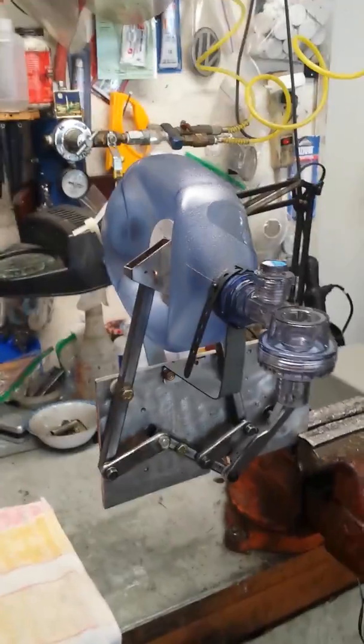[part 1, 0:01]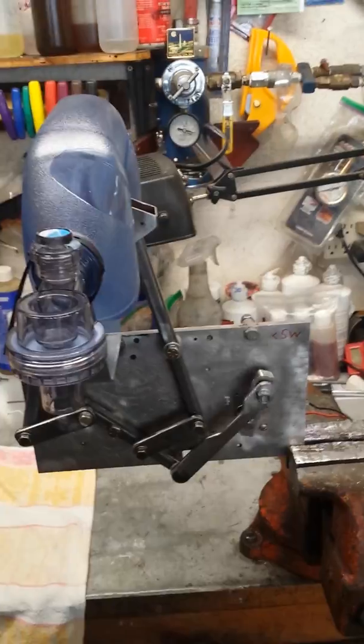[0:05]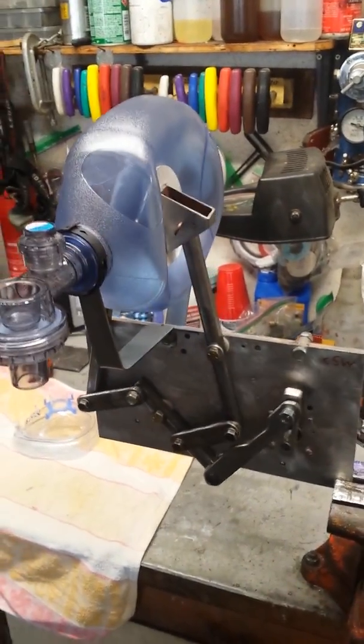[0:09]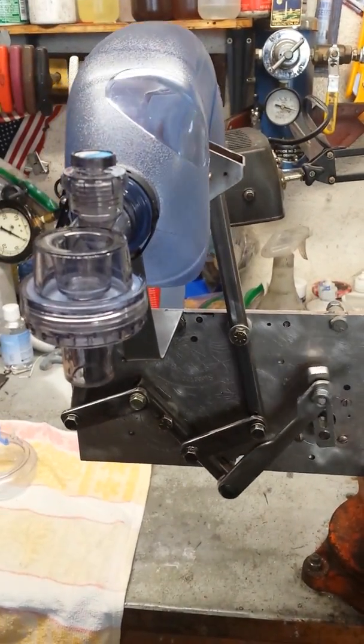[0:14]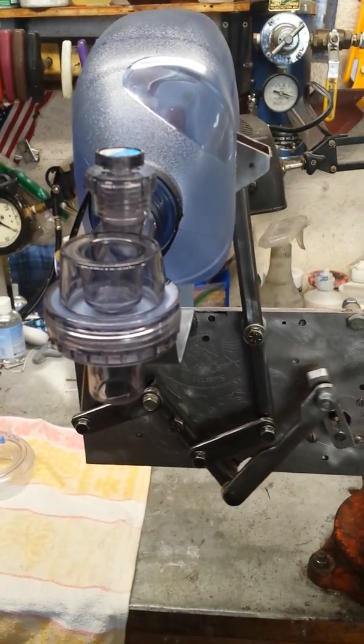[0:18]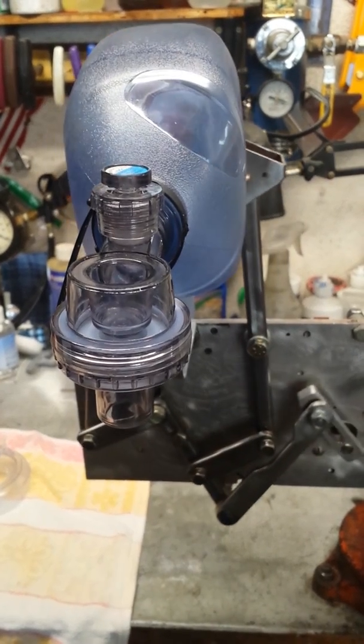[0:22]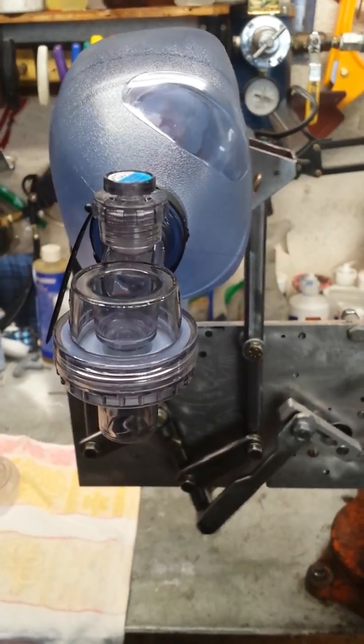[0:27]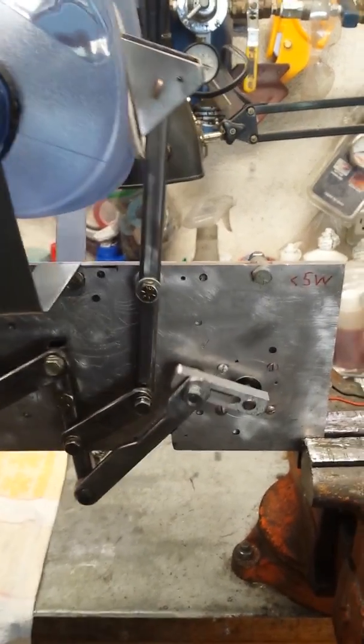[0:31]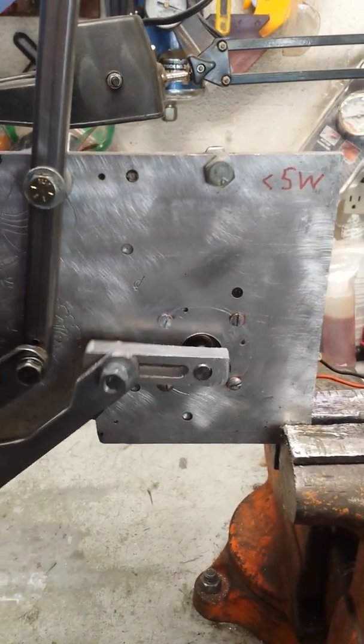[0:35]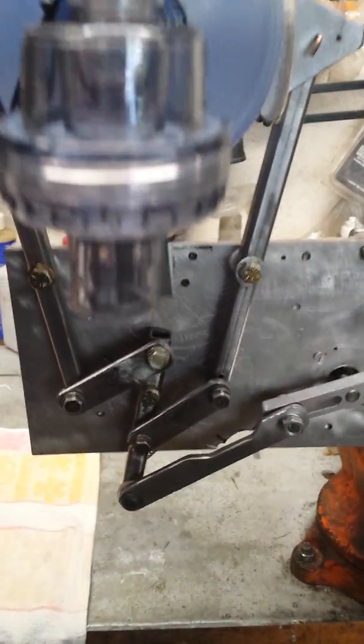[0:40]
Okay, that's using an adult BVM bag. One breath every 5 seconds. And the stroke is adjustable by just sliding it in the elongated slot, and you can adjust it from adult to child.
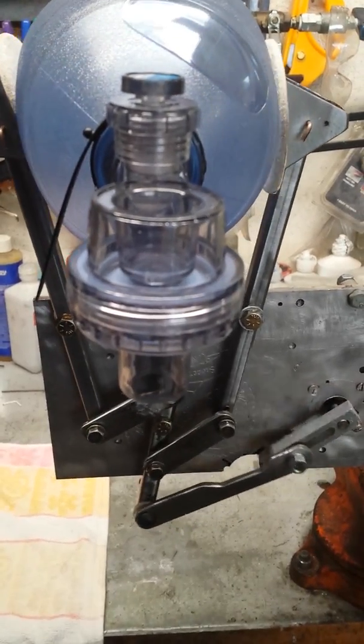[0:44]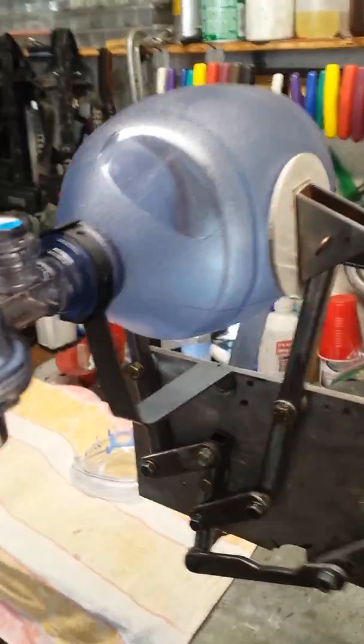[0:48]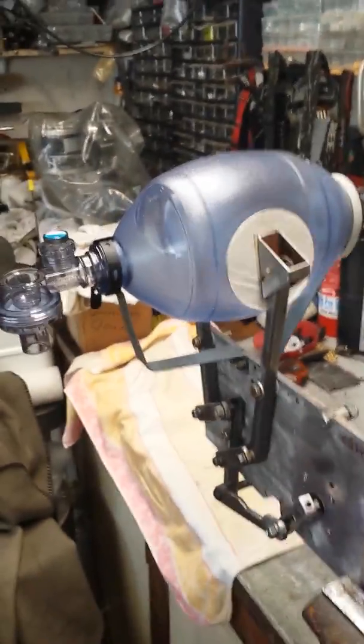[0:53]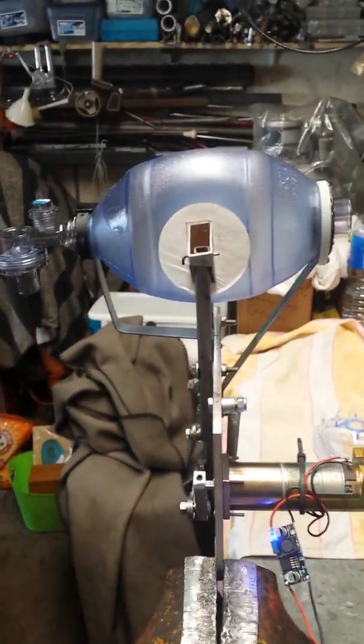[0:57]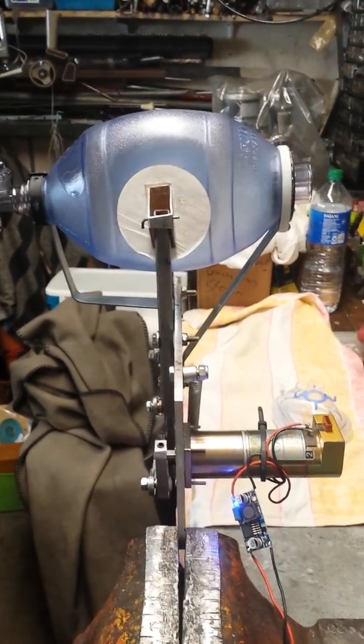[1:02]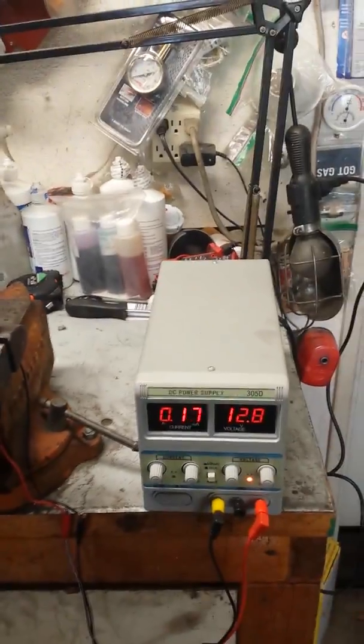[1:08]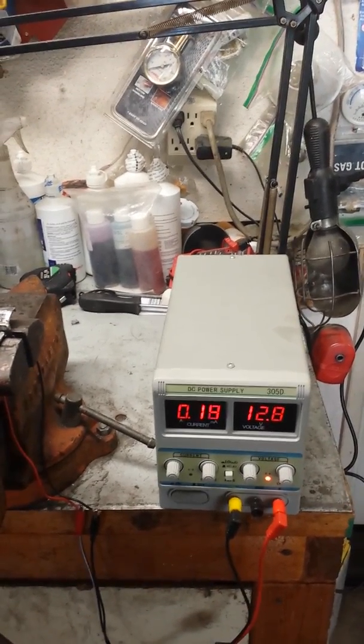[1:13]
And it can be made smart by using a stepper motor, a servo. I have a servo, it's just for simplicity, it's not put in yet. I just use pulse width modulation with a 12 volt input, and it draws less than 5 watts. So we could actually operate it off a car battery if needed.
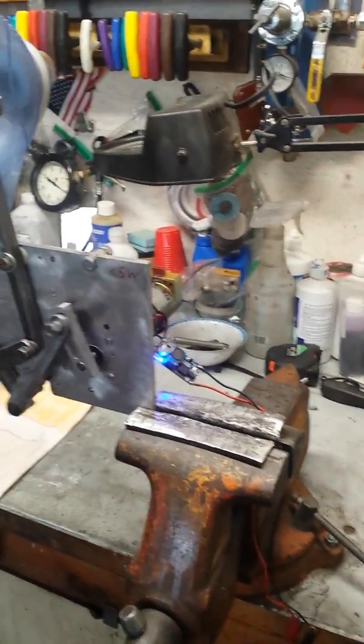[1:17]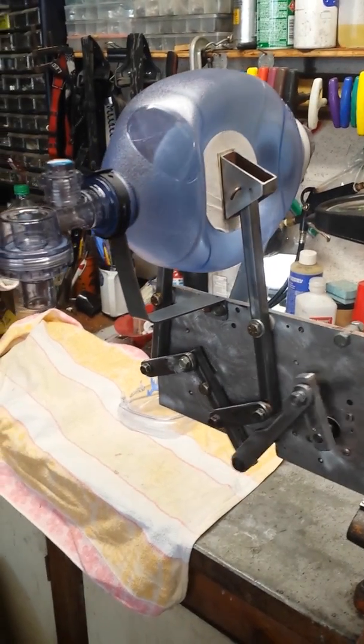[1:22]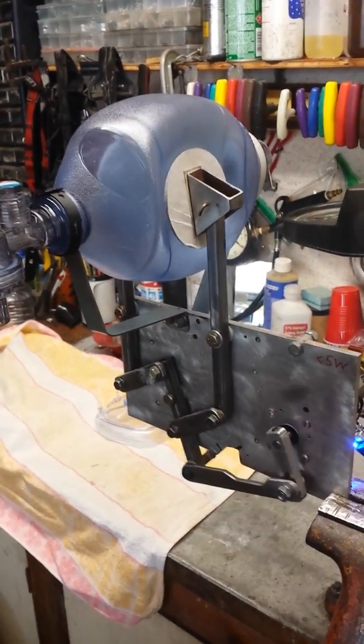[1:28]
If power fails, it should be able to run through the night even on a car battery. And it uses a standard BVM bag to sit tight into the holders.
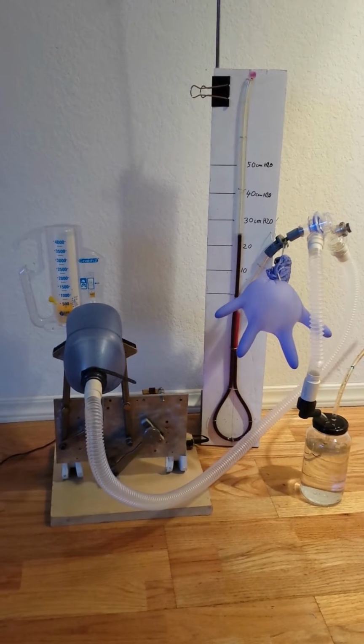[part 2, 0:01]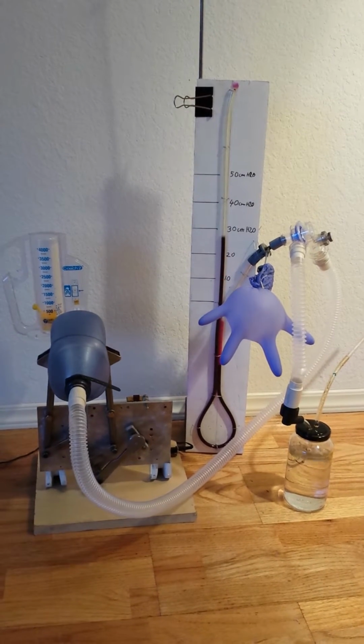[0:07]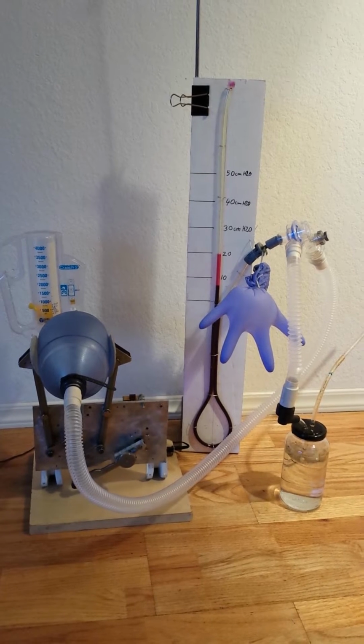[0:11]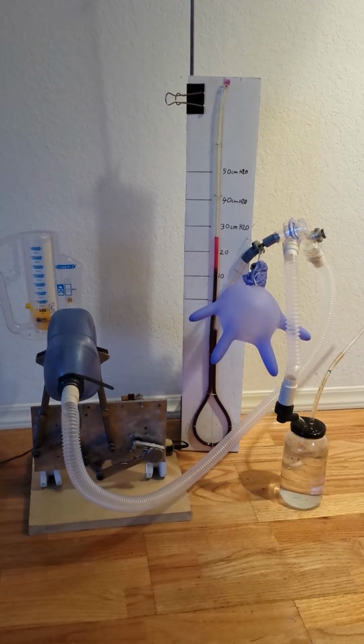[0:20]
Last time I did tidal volume, I did not have a resistant device to actually absorb the volume, the tidal volume. It actually went out to the passive overpressure valve. I just put a glove in so I have something to take up the volume without it blowing off.
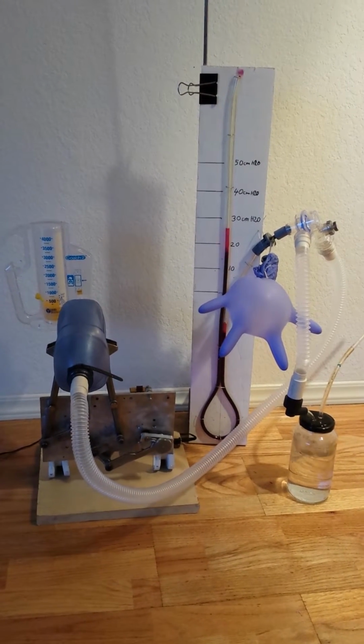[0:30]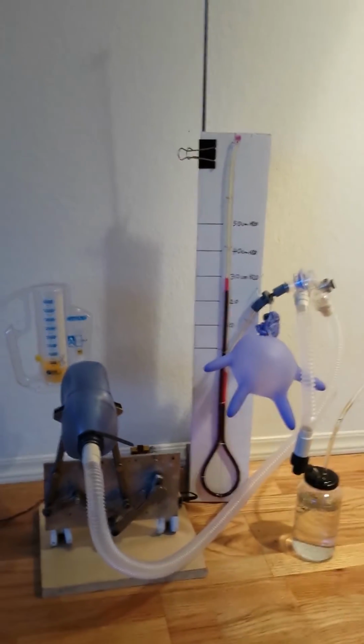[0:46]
So we're still doing 500 cc's at the peak pressure, a little bit over 30 centimeters H2O, with the plateau pressure of about 30 centimeters H2O, and a PEEP of about 5 centimeters.
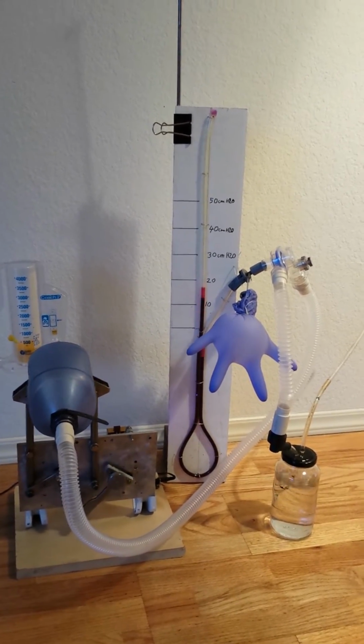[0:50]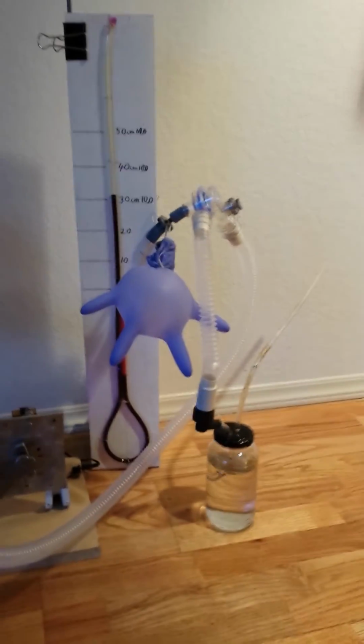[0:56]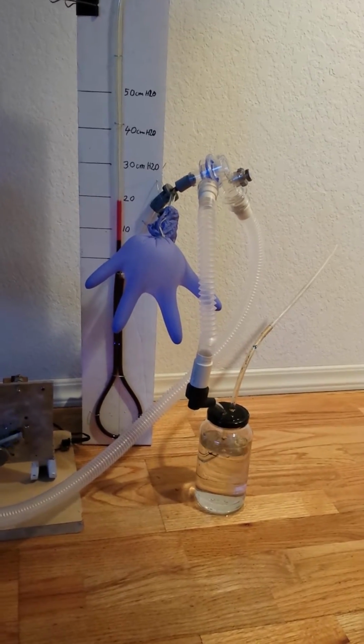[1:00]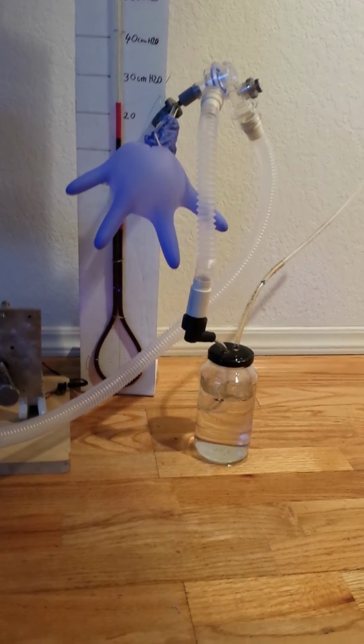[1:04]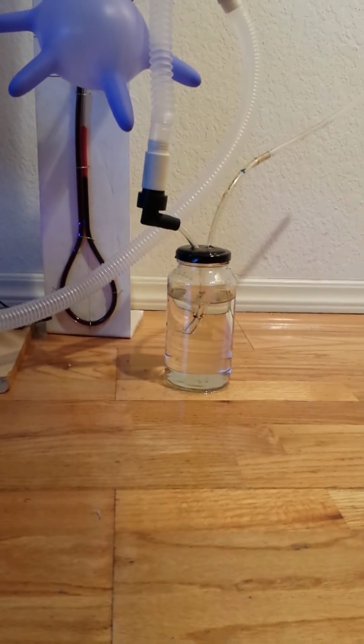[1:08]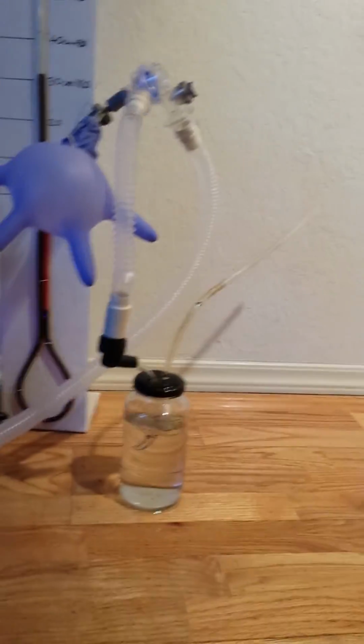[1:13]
I didn't have a PEEP valve, but I just put the exhaust port that's closed up so it doesn't vent into the area where the patient is, it vents into the bottle. It's basically the same as the PEEP valve. It's just a hose 5 centimeters below the water line to vent, and then you can vent the exhaust wherever you want it to vent off.
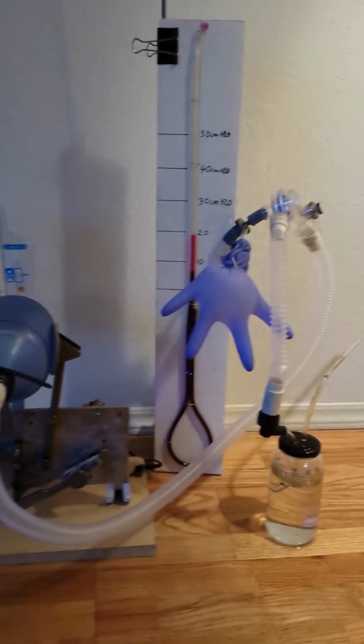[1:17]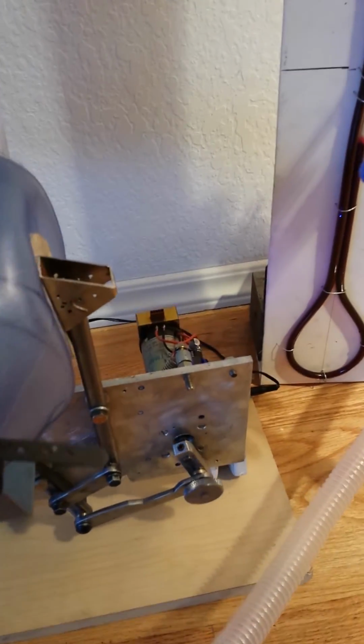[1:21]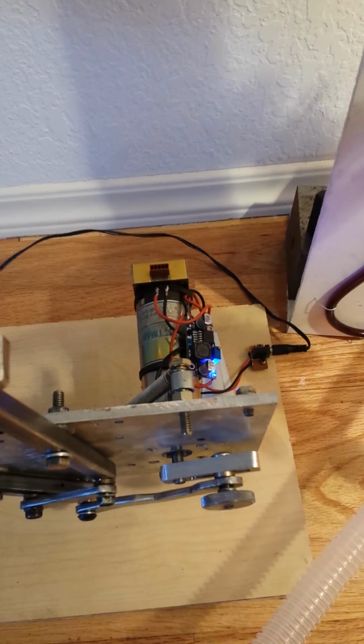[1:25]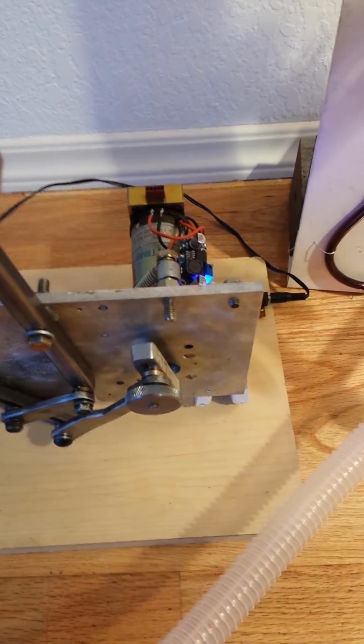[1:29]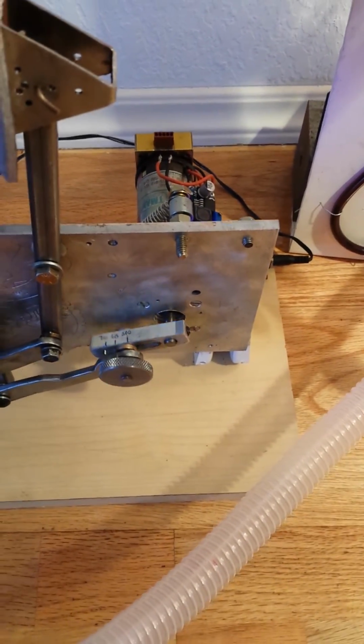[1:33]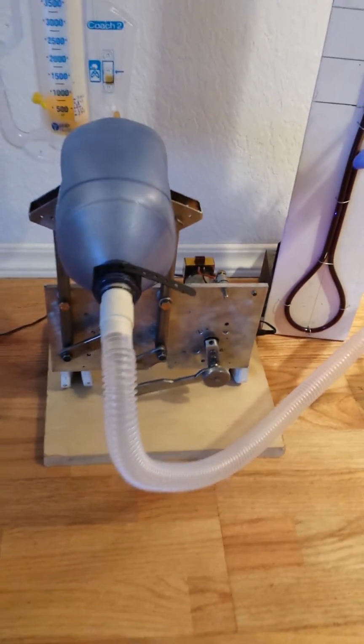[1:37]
And still the same thing. Respiratory rate will be adjusted via the trim pot, and again volume via the control slider here, via the knurled nut. I took the hex nut off, which makes it easier to adjust without any tooling. Okay guys, hope you enjoy it.
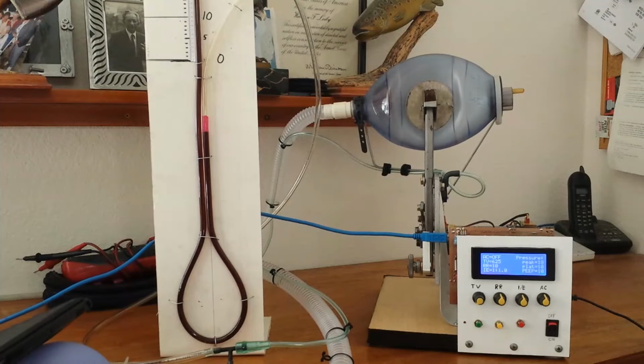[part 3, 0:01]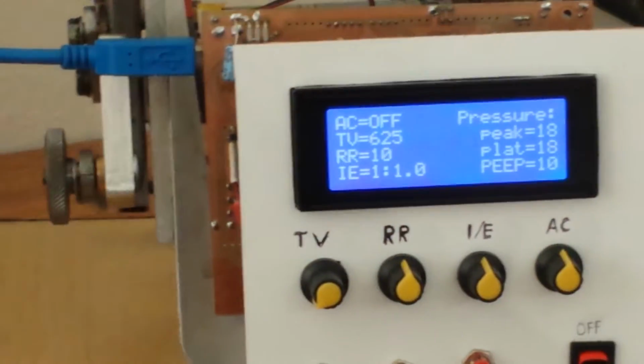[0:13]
Another update. I did get a pressure sense, as you can tell by the screen right there. Excuse me. I'm going to zoom in here. We can actually read pressure now. I used a different sensor. I used an MPX5010DP,
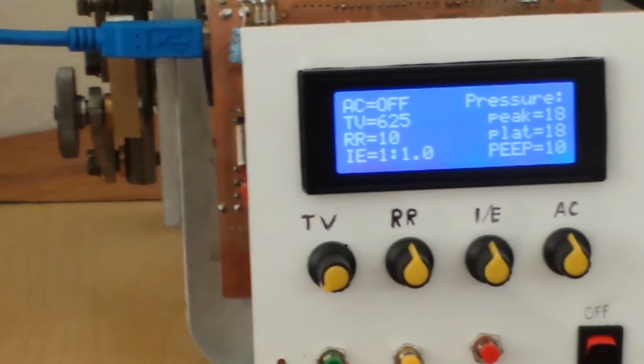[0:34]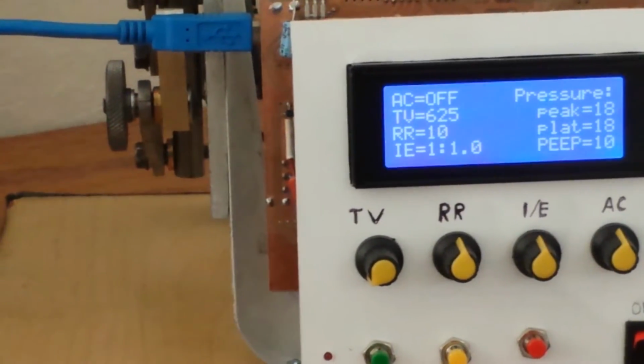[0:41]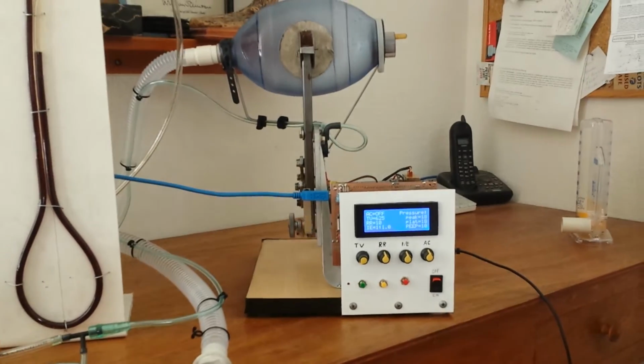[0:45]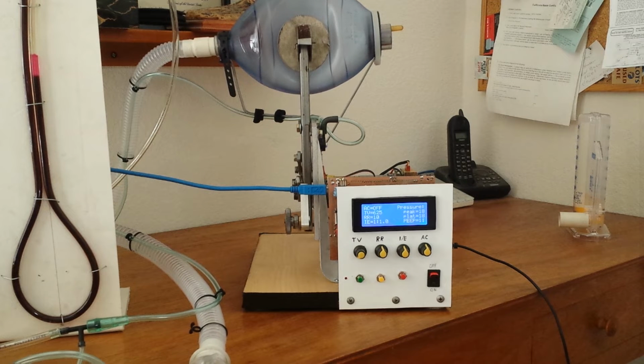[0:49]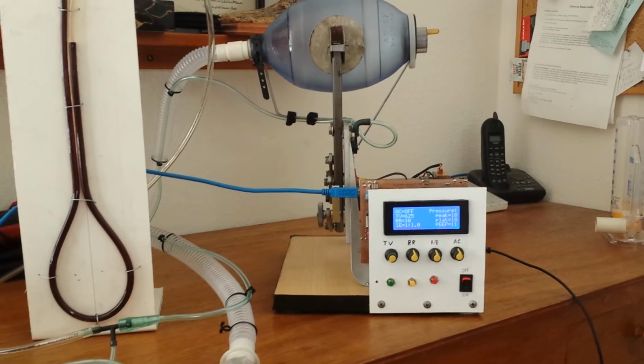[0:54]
put a part of the code in to integrate it, and it's not mounted on the circuit board. I had to take it off. You can see to the far left here that some headers are moving away. I'll get to that in a little bit, but it works very well. It came via AliExpress from China. The sensor that the Event Group uses is still on back order. I have an order in for that too, but I ordered a whole bunch of different ones.
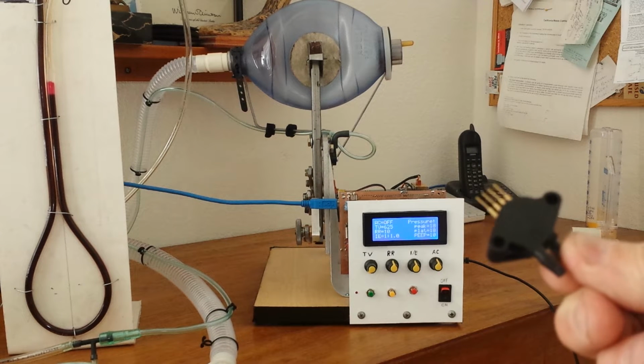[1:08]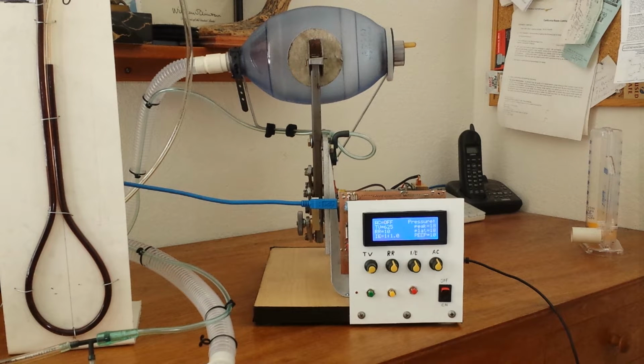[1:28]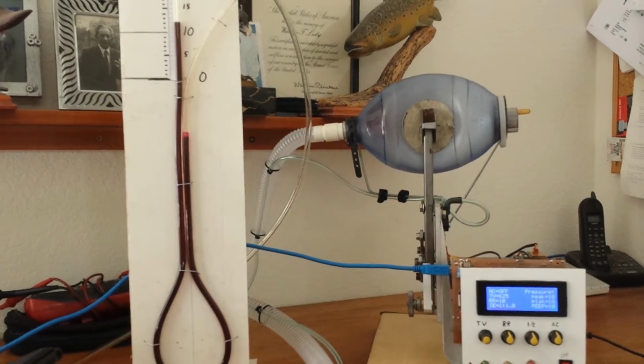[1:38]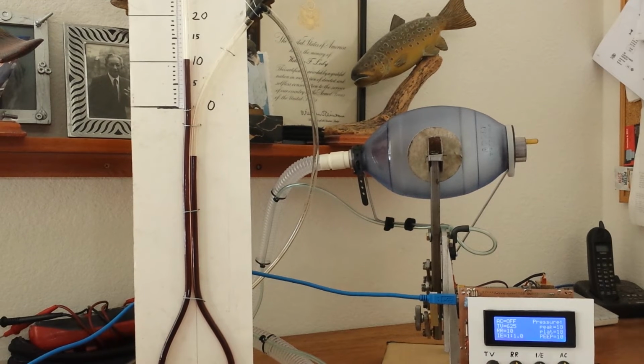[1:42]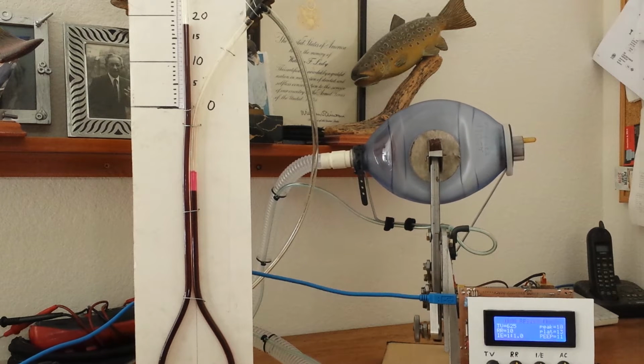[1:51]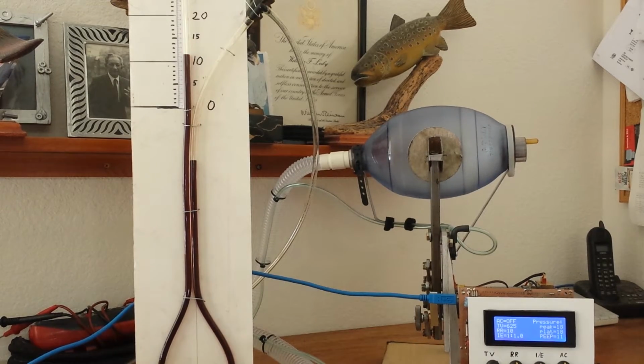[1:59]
And it seems to be dead on. I compared it. Let's see if I can get both the gauges in there. So what you see is peak pressure. That is where you see 18. Now it has a high pressure alarm because I use it thin too. But let me go silence it. That's probably okay. There you go. Let me just get in.
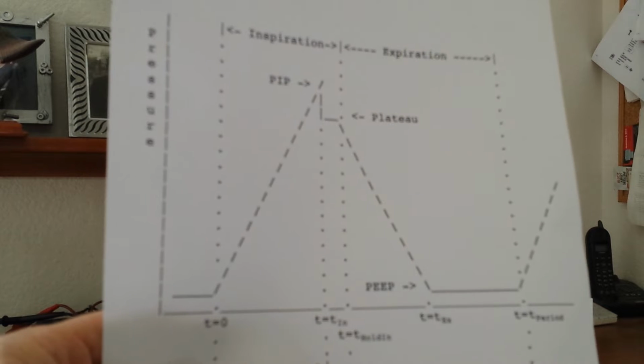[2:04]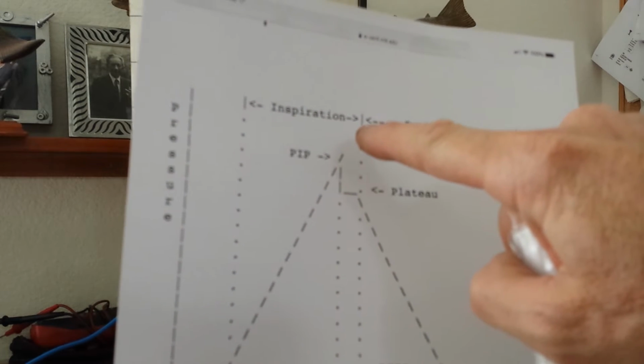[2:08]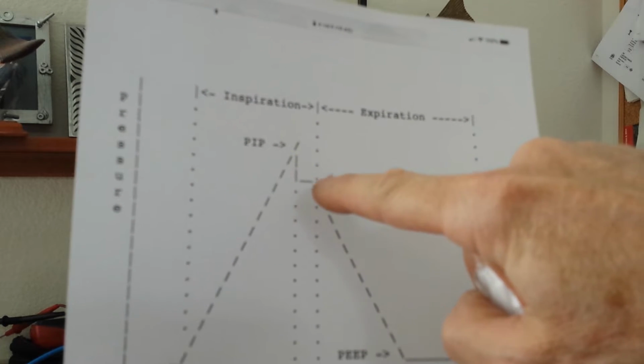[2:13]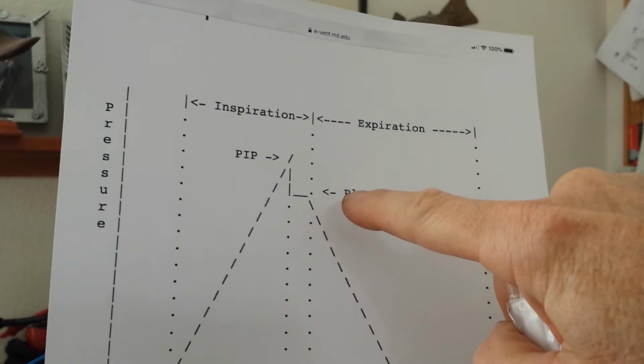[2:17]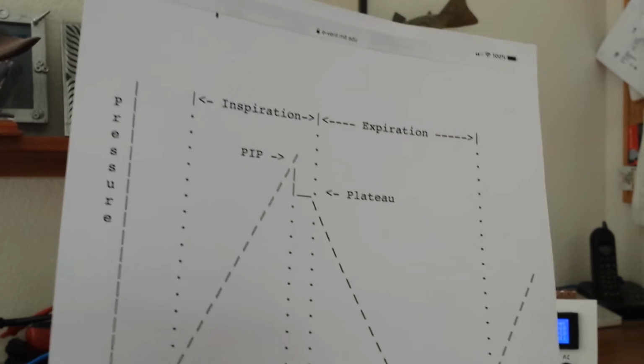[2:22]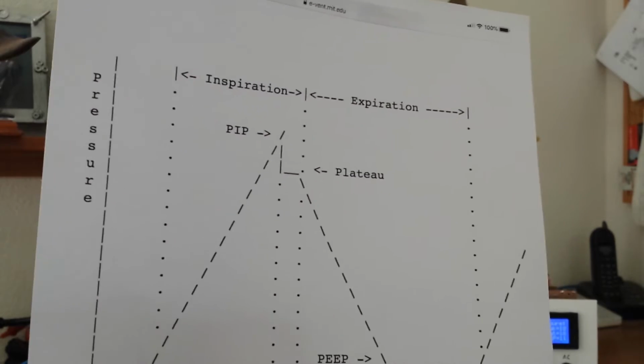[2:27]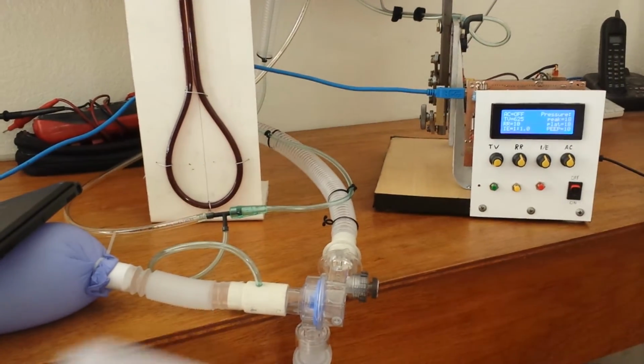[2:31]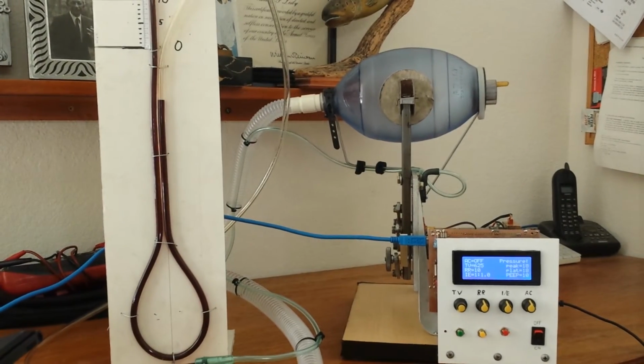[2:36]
So you'll see the pressure curve where the wave goes up and reaches that peak inspiratory pressure. Then it comes back down, plateaus for a tenth of a second, and that's the next lower number you read. And then it drops down to the PEEP, the positive end expiratory pressure at the end, where we manually dial that in via the PEEP valve down there. So that's manually set in. We just read it off of here.
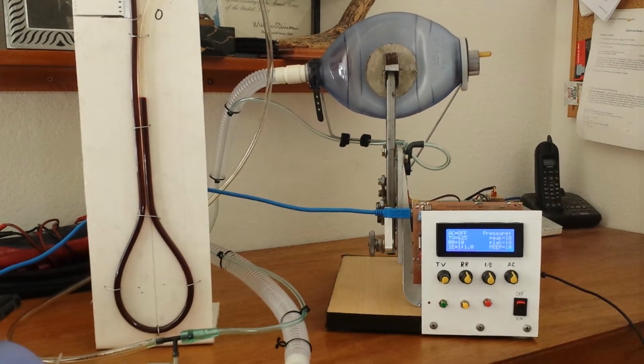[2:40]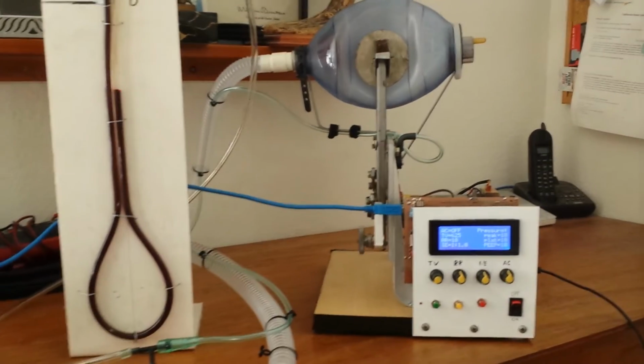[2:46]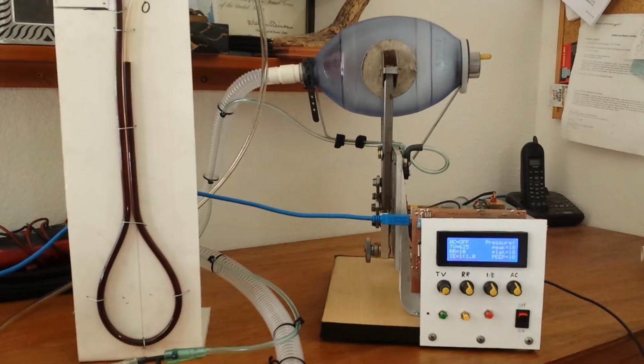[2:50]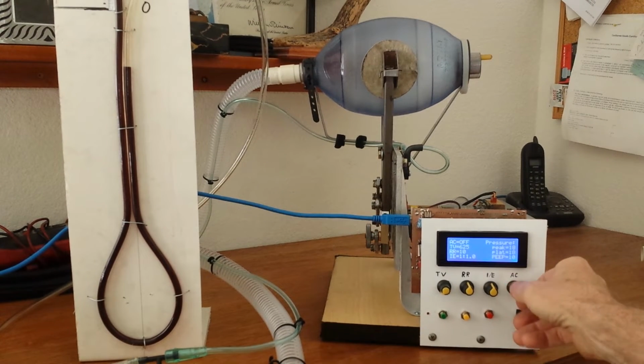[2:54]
And also with this, we can also use assist breathing. We can set that up by, let me zoom out again. So we would dial that in. If that drops, so I have two centimeters of, let me just confirm it so the blinking goes off. If it drops two centimeters of H2O below the PEEP pressure, so at 8, it would trigger a cycle. So that's simulating, well, initiating as a person taking a breath. So if a person doesn't take a breath, it'll give a breath cycle by the set respiratory rate. And that function as well, I can maybe show you later.
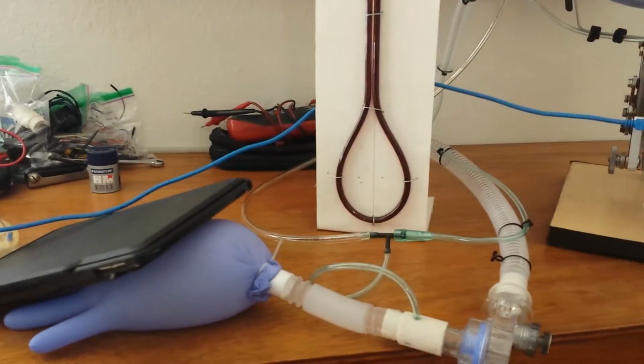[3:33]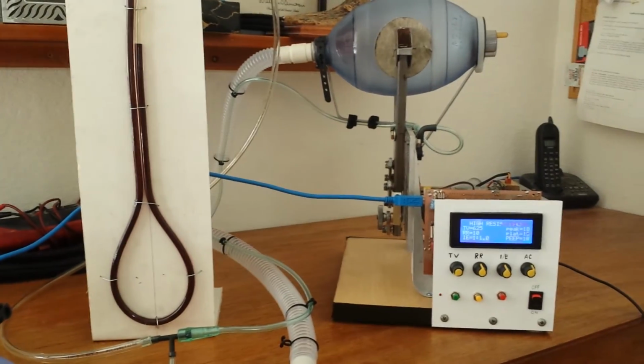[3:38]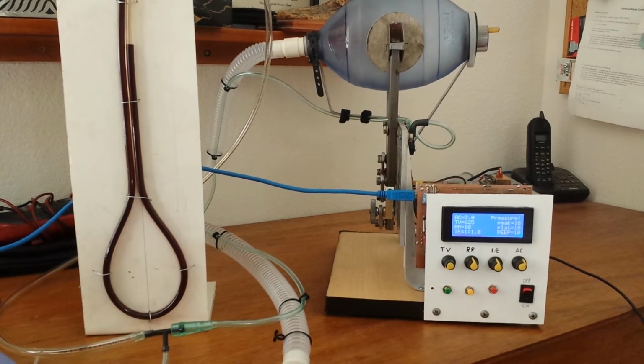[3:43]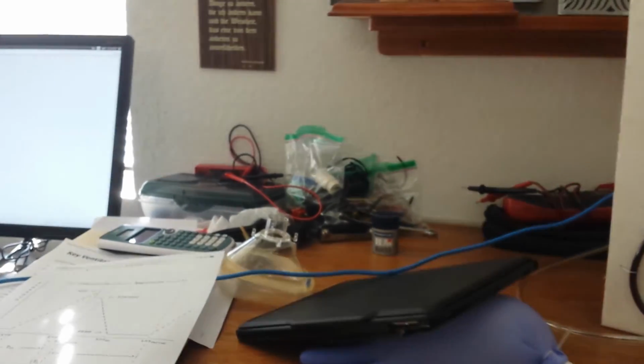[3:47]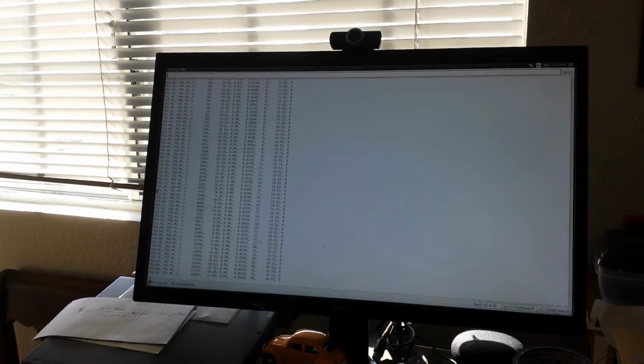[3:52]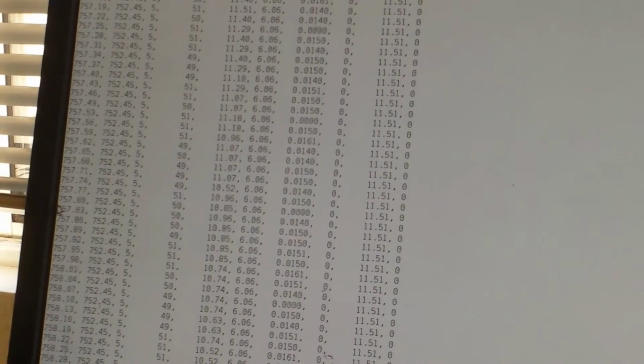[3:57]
I'm not going to hook up a mask because I didn't want to, but I can just lift. I just put an iPad on my simulated lung there, which is just a glove. And I can show you some data logging real quick. So let me zoom into here so you can see a little bit more. Okay, this is hooked up to the serial monitor.
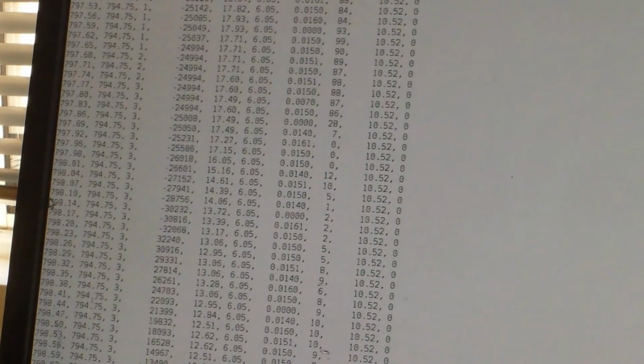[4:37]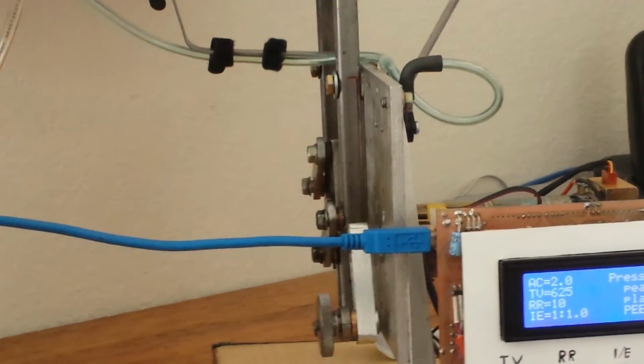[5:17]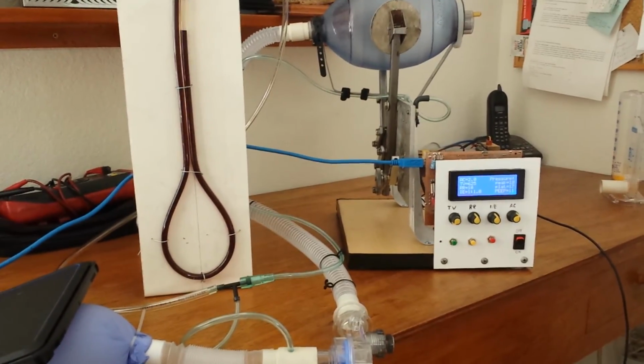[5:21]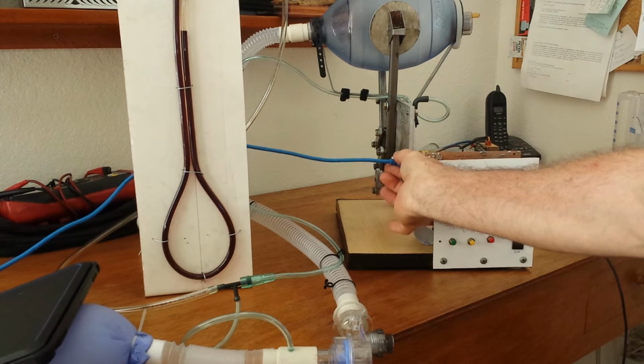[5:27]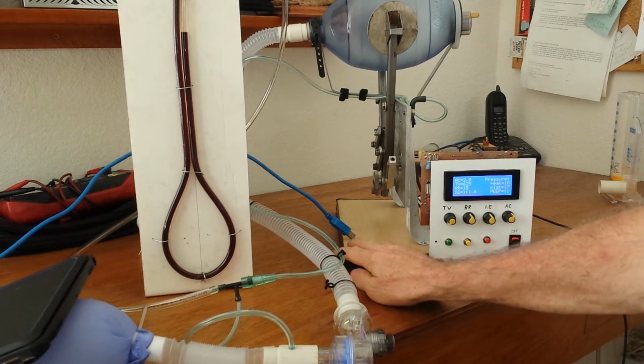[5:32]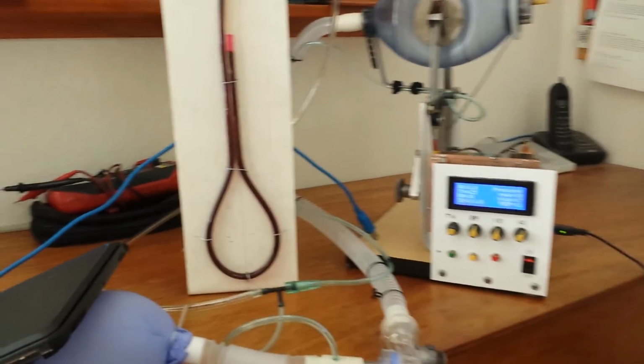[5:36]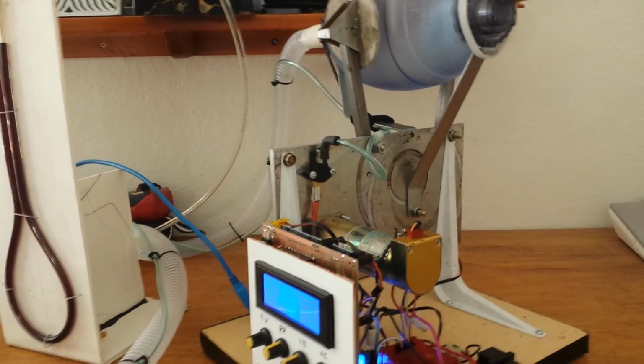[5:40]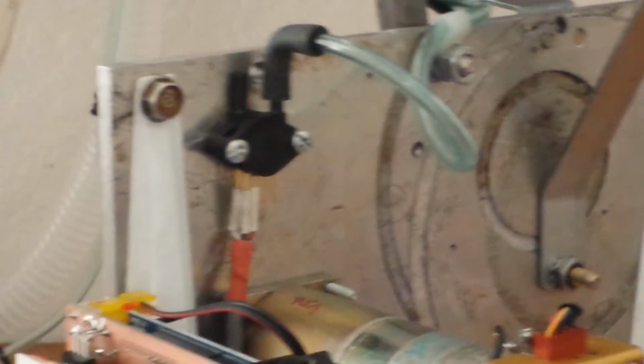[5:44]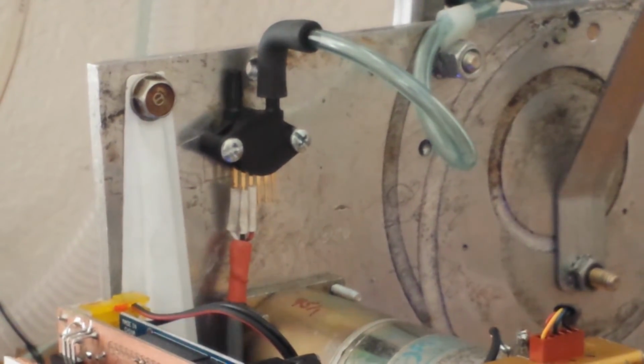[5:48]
You go back into here. Go back in there. There we go. So let me just get that set up. Let me just disconnect the serial port cable. Okay, so the pressure sensor is, let me show you. Okay, you can see it. It's just mounted right there. Again, that's an MPX5010DP. It has larger port sizes than the original one that the E-Vent group uses, and that's on the motherboard. I just took some wires from a header, soldered in a header instead because I don't have the other sensor and I want to continue testing.
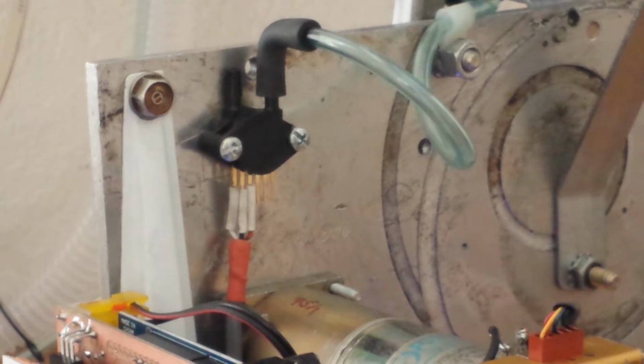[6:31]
These ports I think are like 4 millimeters versus the Honeywell one that was specified on that board, which was only like 1.9 millimeters, teeny little fragile ports. I would hate to break one of them, so that's why I put a rubber hose on this one. I'm supposed to get different sensors, including the Honeywell sensor, hopefully by the end of the month. I'll keep you updated. This one works. I'll post the code for this one as well. So far it seems to be dead on, and I'll continue testing and keep updating. Once it's all done, I'll build the final machine once I know everything works properly.
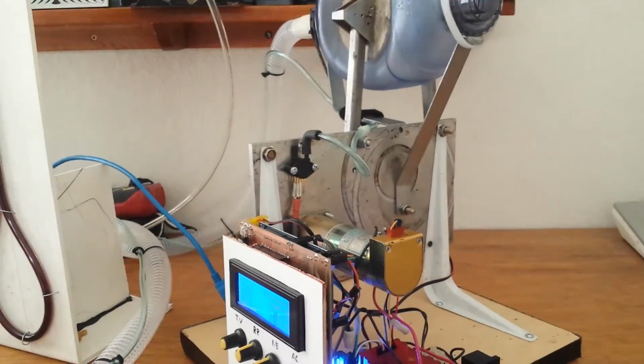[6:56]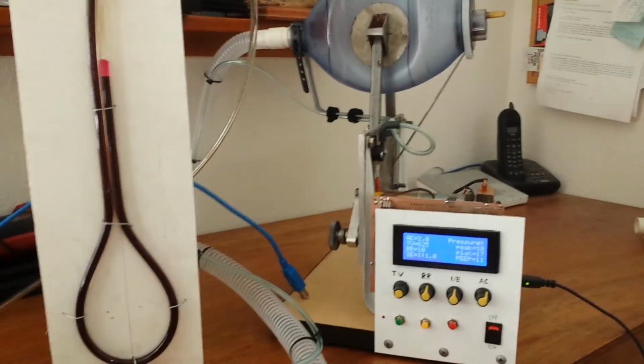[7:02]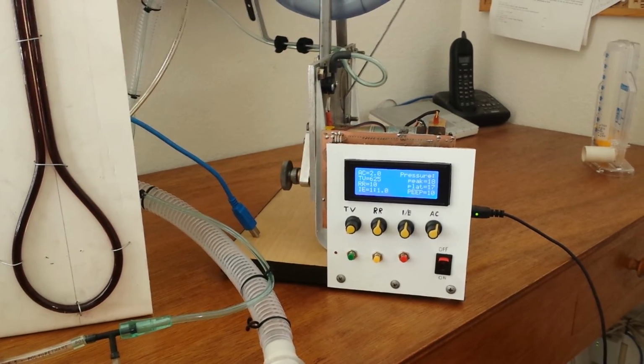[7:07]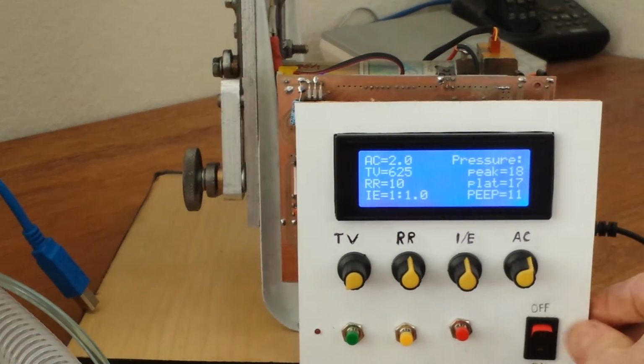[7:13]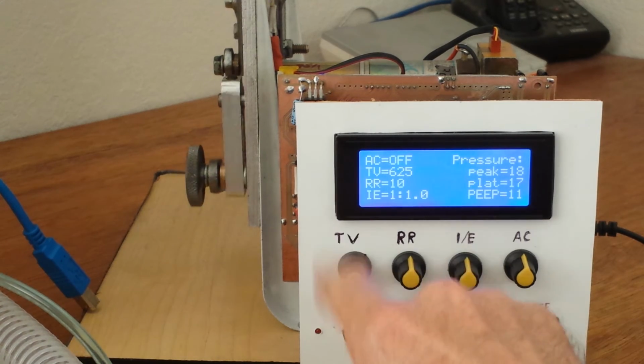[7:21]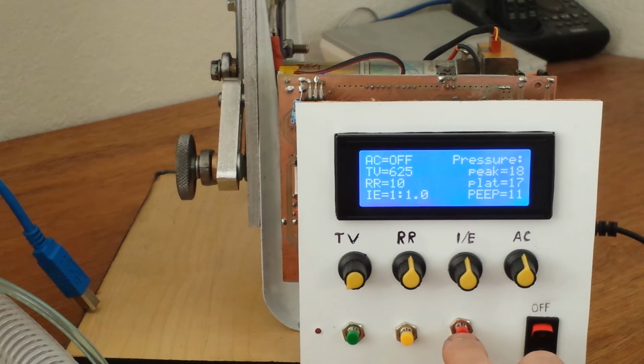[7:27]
So I'll get back in just to go over some more features that I forgot to mention. So if I wanted to, hang on, set this up. Okay, so now that we have assist control, I change it to verify it. If I don't hit it, there we go. This is all still the same. If I wanted to park it, I could turn it off. I'll just extract the arms. It's turning off, silence the alarm. I also put an LED in there, turning off.
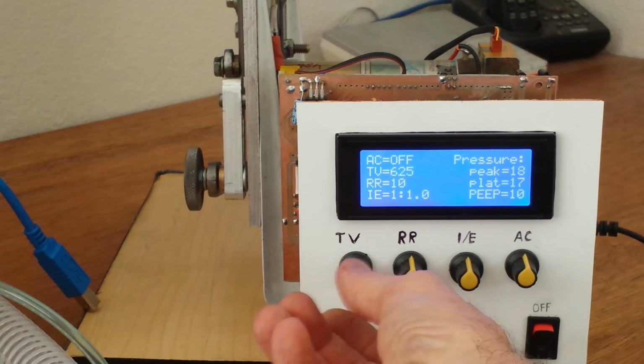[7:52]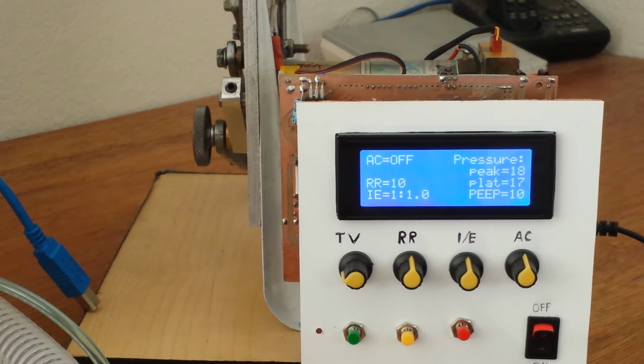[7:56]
So I wanted to start it again. I just hit the green button. Very simple. And PEEP, if I wanted to tweak it down, I manually have to adjust the PEEP valve. So I just turned it down to 10. If I set the tidal volume and don't do anything, it will blink for a while and then an alarm comes on. It will ask me, do you want to change it? Do you want to really set it? If you do, you just hit set. Okay. There you go. So breathing assist is working now since we have a pressure sensor.
I've been running it for days now. It doesn't seem to be a problem with it. So I'll keep you guys posted.